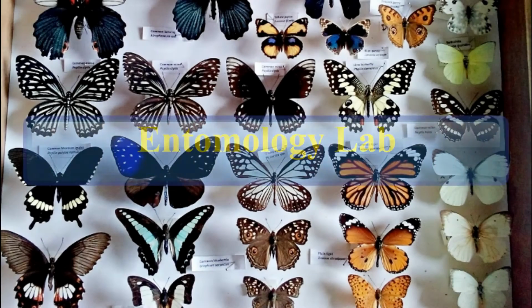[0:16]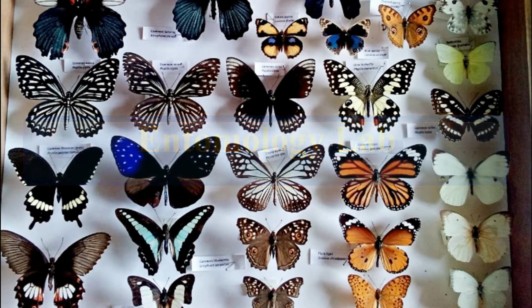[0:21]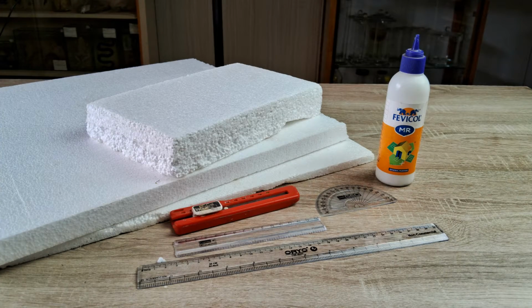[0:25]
Hi, and welcome back to another episode on the subject of practical entomology. This video is going to be a short and concise tutorial on how to easily make your own insect spreading boards of different sizes and configurations using just a piece of styrofoam or thermocol and some glue.
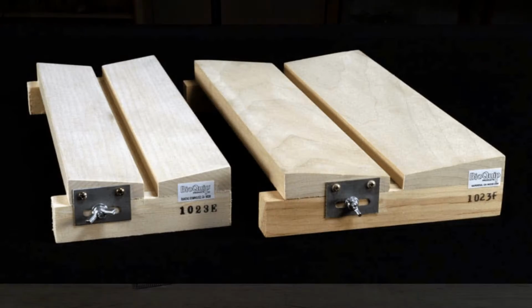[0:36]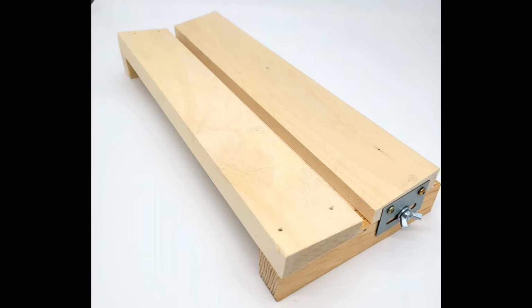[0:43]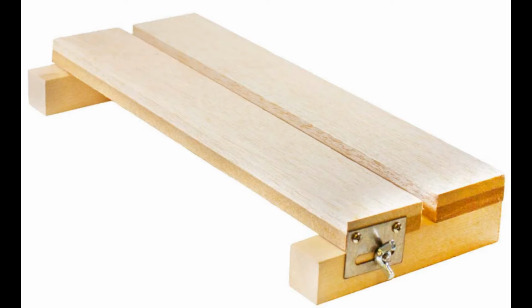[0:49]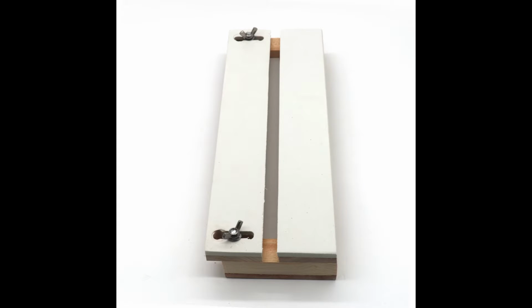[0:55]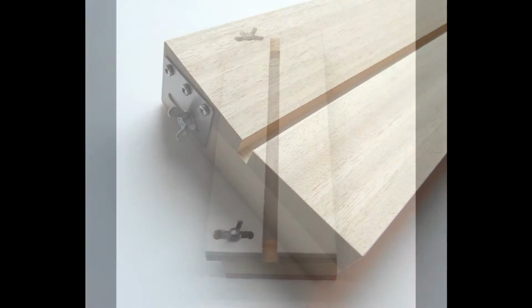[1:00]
Insect spreading boards are traditionally made from soft balsa wood that facilitates quick and effortless insertion of pins through the wood while setting insects. The width of the central groove in the board can also be adjusted to accommodate the body and the limbs of the insect being spread. Wooden spreading boards are, however, not that cheap for insect amateurs and hobbyists. Besides, they come in fixed standard sizes and you obviously have no option for custom sizes.
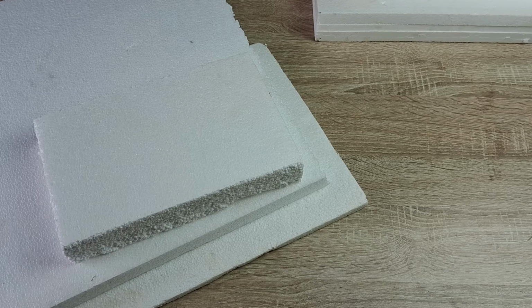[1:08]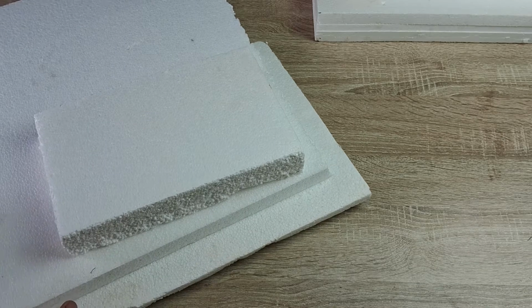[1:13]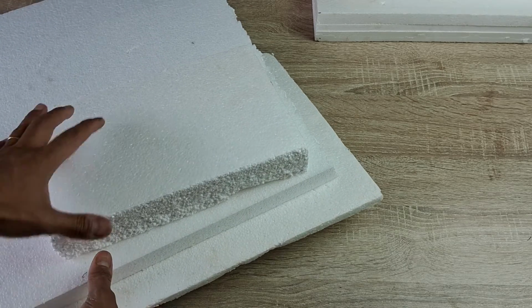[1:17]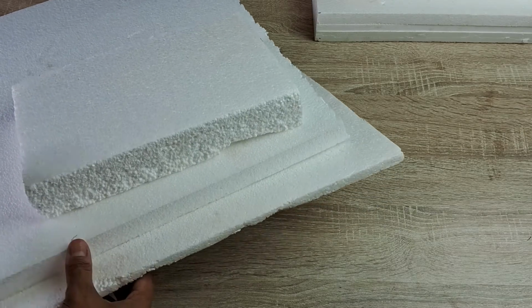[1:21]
In this video, I'm going to show you how to make a very simple yet equally effective spreading board of any dimension you want at a fraction of the price that you'd have to pay for a standard wooden board. This tutorial comes from my own years of experience of using the thermocol spreading board.
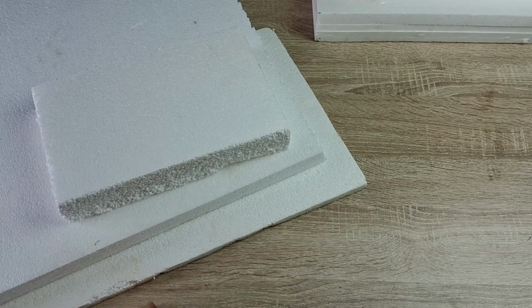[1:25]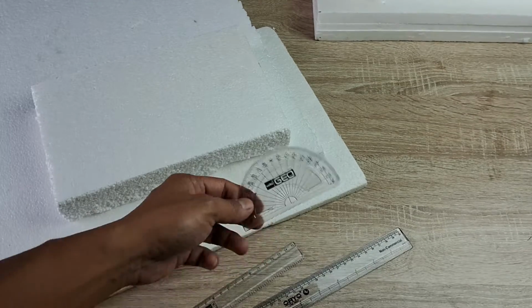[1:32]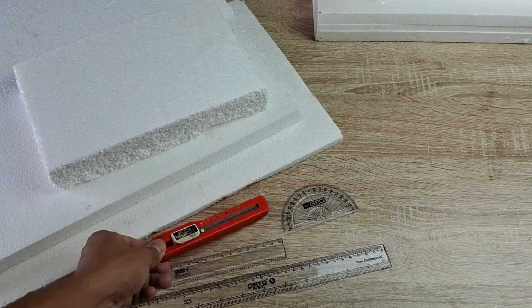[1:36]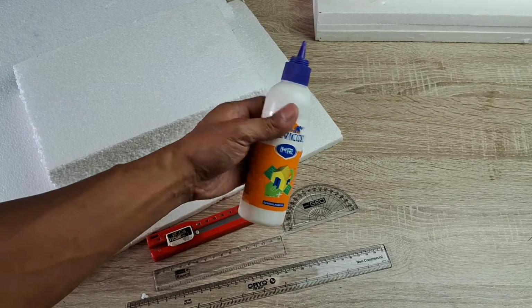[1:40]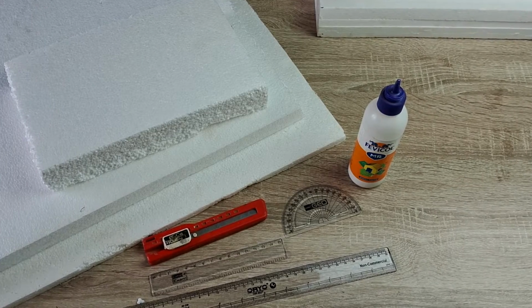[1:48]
So to begin, all you need is some sheets of thermocol, or loosely termed styrofoam in some parts of the world, a transparent plastic ruler and protractor, paper cutter, and a tube of PVA glue such as Elmer's glue or Fevicol. The main advantage of a DIY spreading board is that you can construct a board of any dimension and angle of the sloping platform of the board. These parameters are significant when we consider the huge variation in insect size and shape.
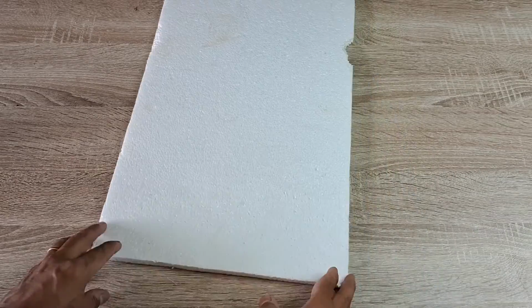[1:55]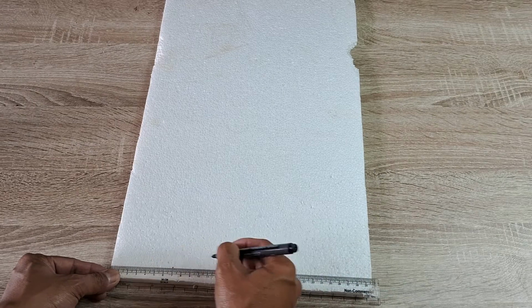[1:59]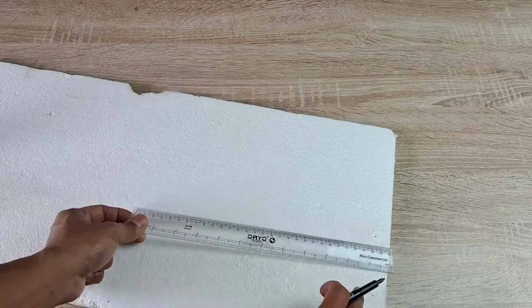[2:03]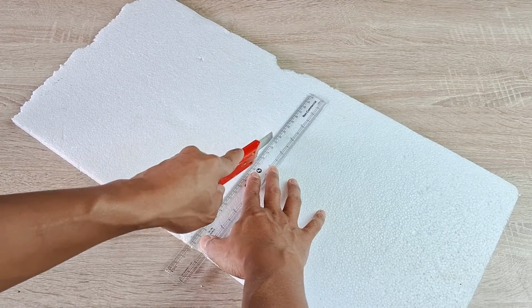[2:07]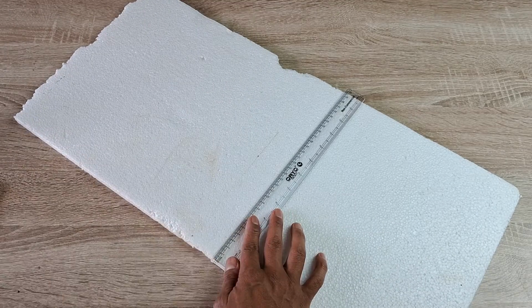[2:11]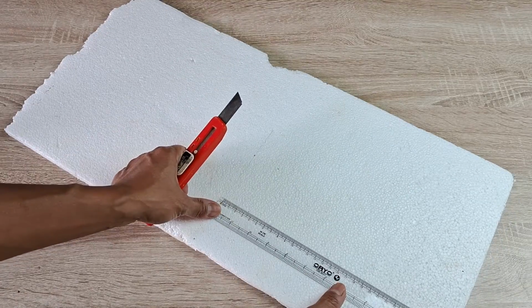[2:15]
To begin, take the thermocol sheet, which is about half an inch thick. Make necessary measurements and markings of the required length and width, and then carefully cut out two sheets of equal dimensions. These will be the two spreading platforms. So when making measurements, keep in mind the average wingspan of the insect specimens you'll be working with on that spreading board.
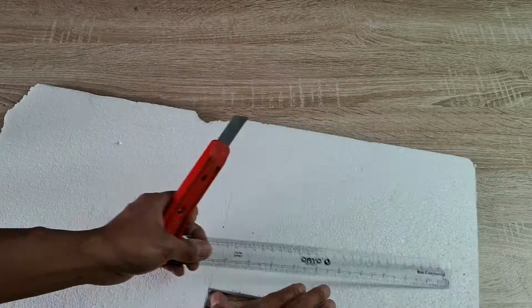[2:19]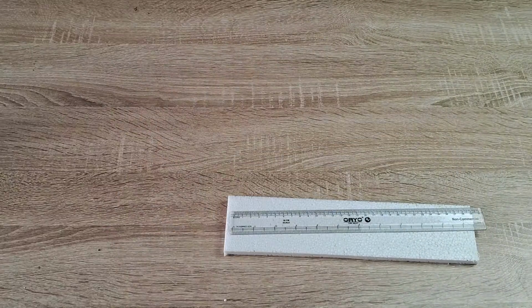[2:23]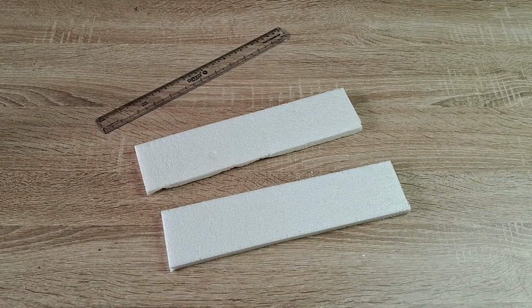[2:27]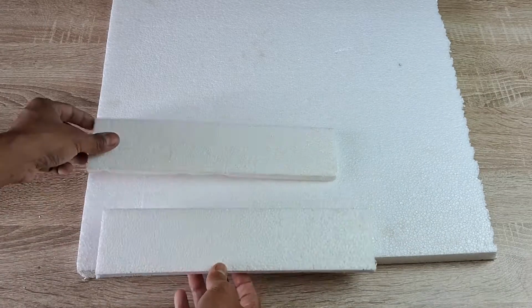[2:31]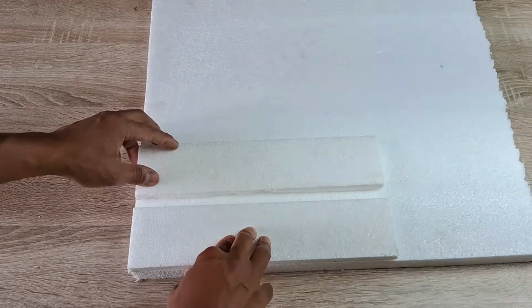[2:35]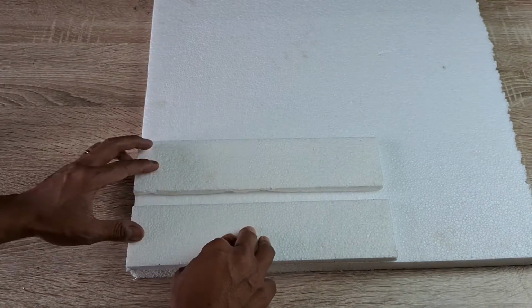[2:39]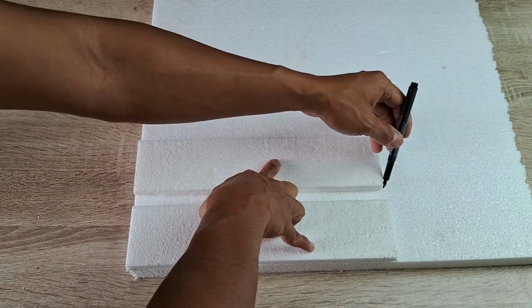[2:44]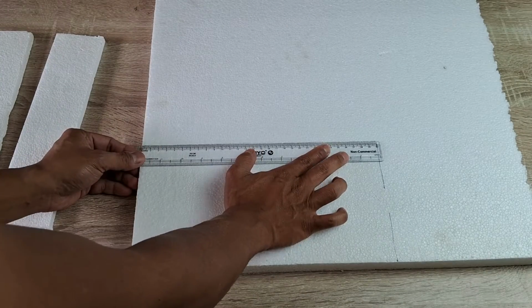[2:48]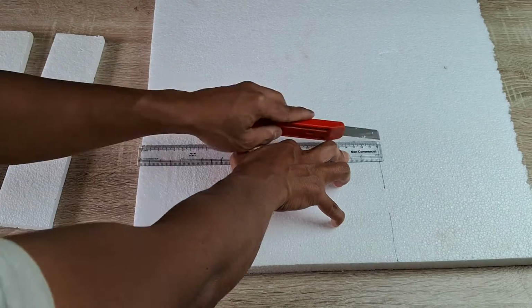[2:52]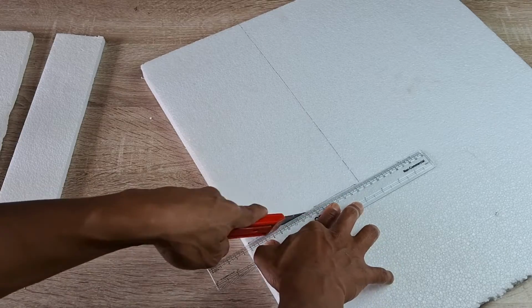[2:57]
Now, take another sheet of thermocol that is about 1 to 2 inches thick. Lay the two previously cut sheets side by side on top of this thick sheet, like so. Make sure to leave a longitudinal space in between the sheets. Make necessary markings and then cut the thick thermocol sheet to the required size. This cutout sheet will be the base of the spreading board. In case you don't find a thick sheet, you can just glue two or more thinner sheets together to make a thicker sheet, which can then be used for the base.
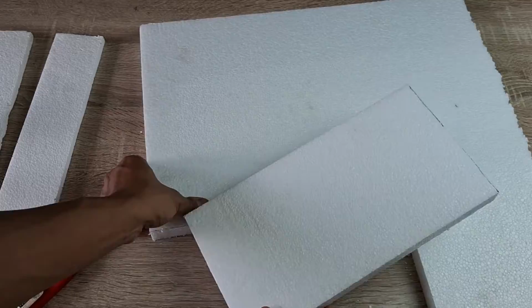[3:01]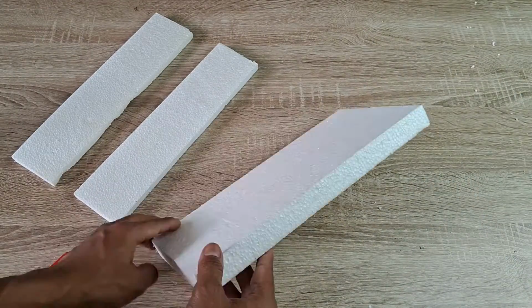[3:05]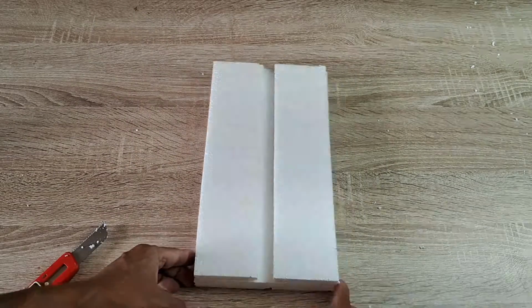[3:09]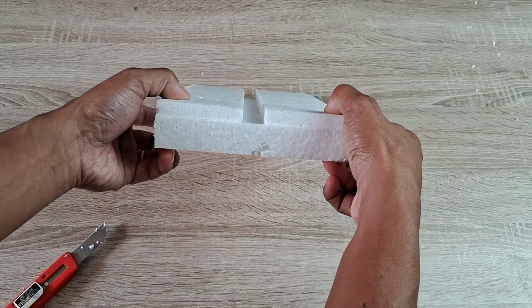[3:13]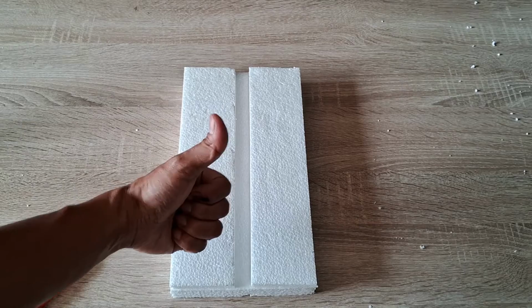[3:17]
Now, if you're not too particular or choosy about whether the wings should be spread at an angle or not, then all you need to do next is to glue the two sheets on top of the base sheet, leaving a groove of desired size in between, like so. Your insect spreading board is ready to be used. However, if you're someone like me who wants their specimens to have their wings set at an angle, then there are a few extra steps to follow.
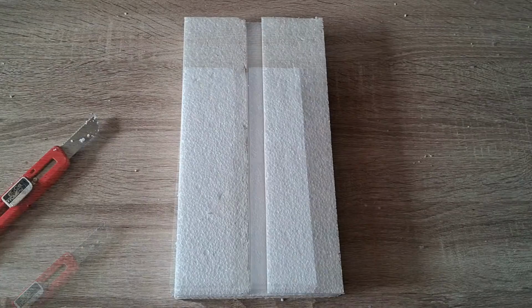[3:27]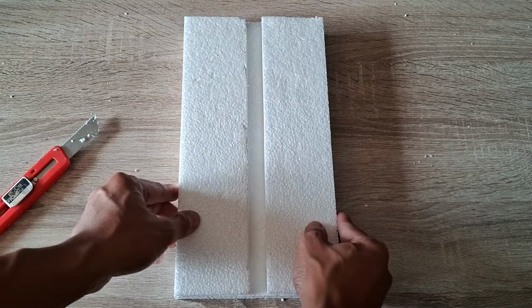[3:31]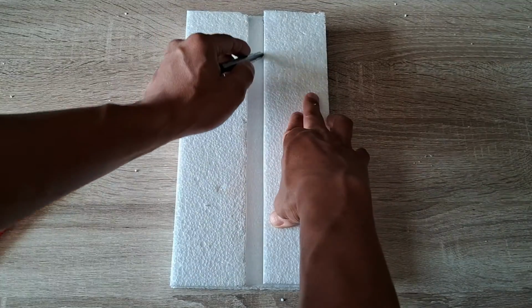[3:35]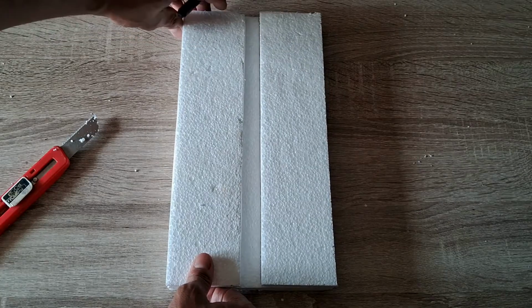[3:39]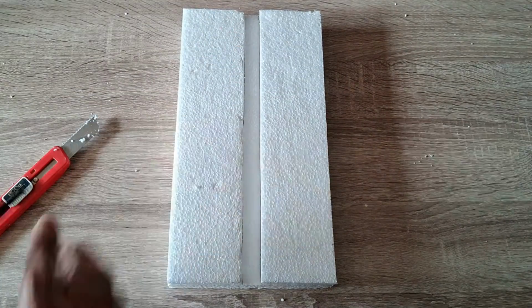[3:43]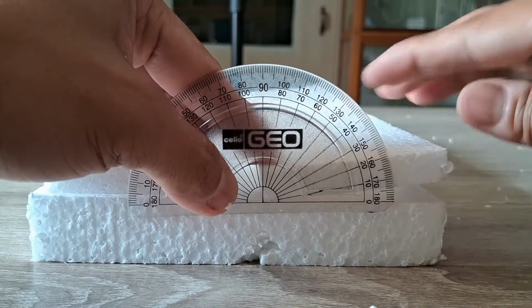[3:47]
First, place the two thermocol sheets on top of the base such that the two sheets are separated by a groove of the desired size and width. Then draw marker lines along the length of the sheets to mark the boundaries of the groove and the position of the thermocol sheets, like so. Then, using a transparent protractor, measure the angle that you want the wings to be set at. I use 10 degrees slopes for my boards.
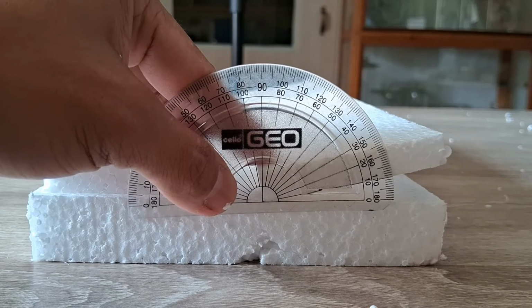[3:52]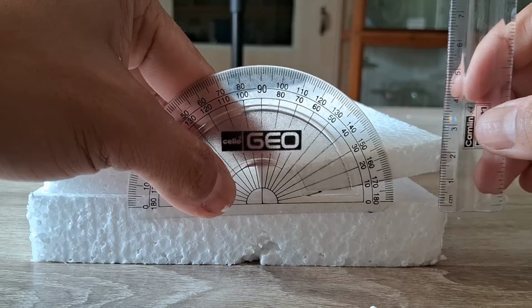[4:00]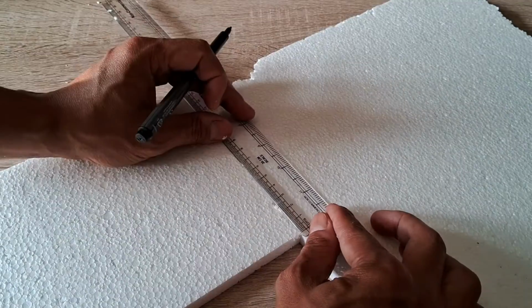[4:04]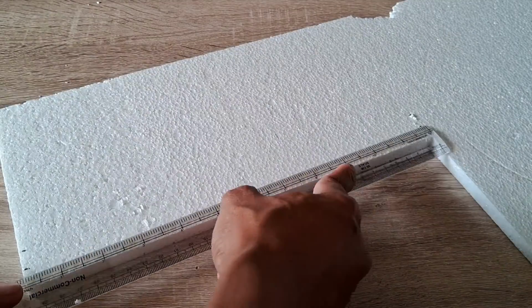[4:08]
Next, measure the height from the base of the board to the extreme lower edge of the slanting sheet, like so. Now, using this measurement, cut two narrow and long strips of thermocol of equal dimensions. Then, if necessary, cut these two strips to the same length as that of the spreading board you're making.
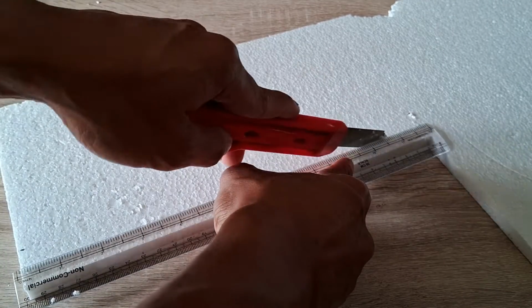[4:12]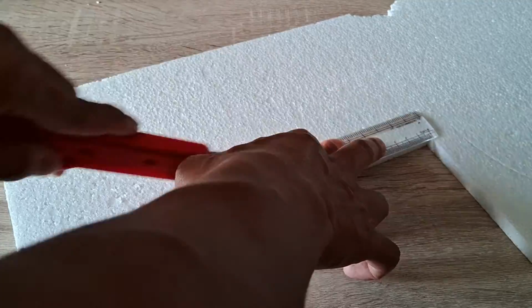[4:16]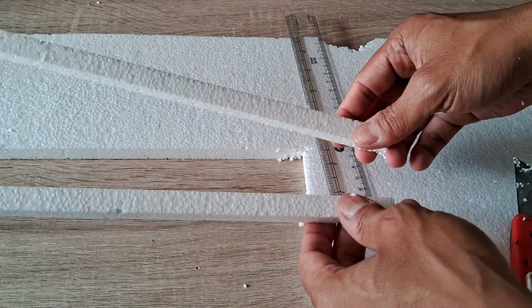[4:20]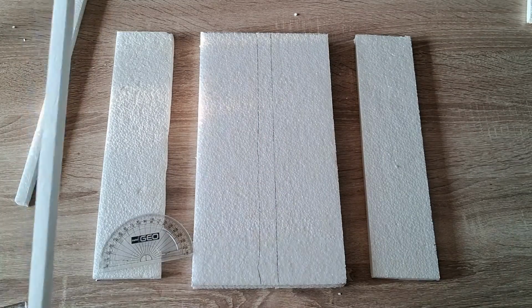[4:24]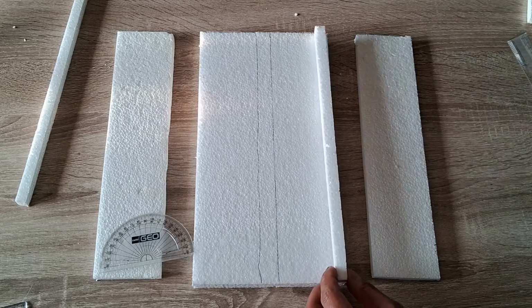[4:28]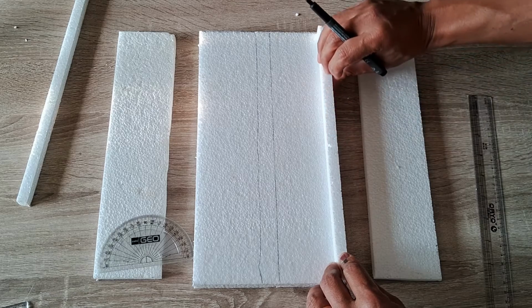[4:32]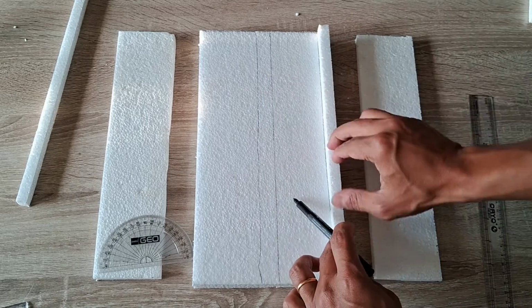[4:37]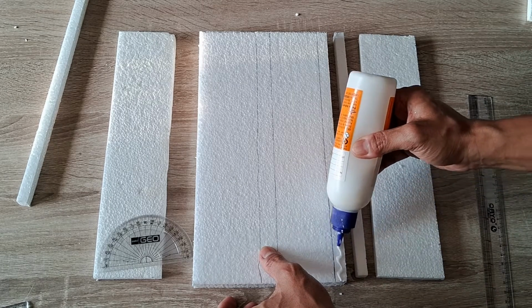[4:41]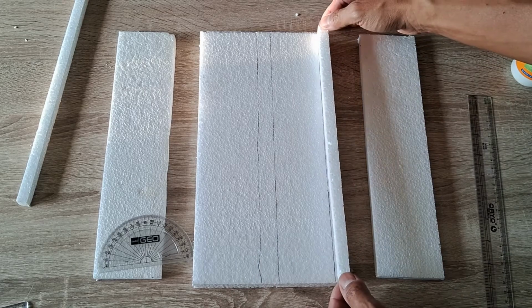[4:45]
Once that's done, take one of the pieces and lay it straight along the corner on one side of the base. Make a final adjustment if necessary. By using a marker, mark the position of the thermocol strip. Keep the thermocol strip aside and apply PVA glue all along the edge of the base, and then press the thermocol strip firmly into position using the previously drawn marker line as your positioning guide.
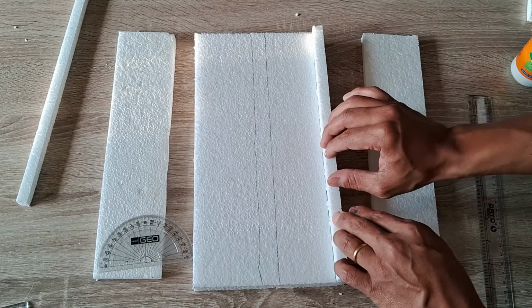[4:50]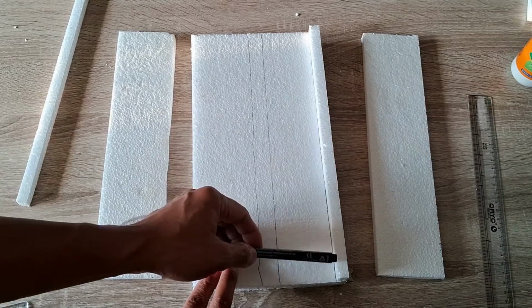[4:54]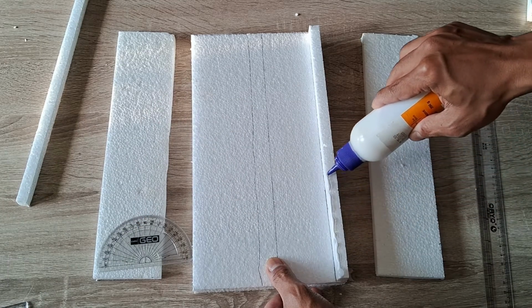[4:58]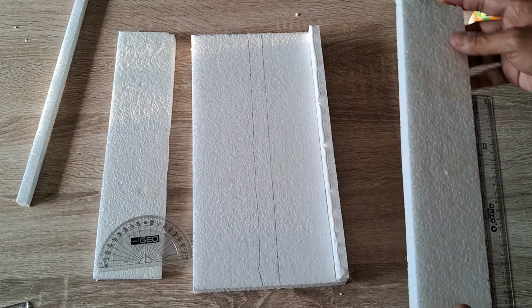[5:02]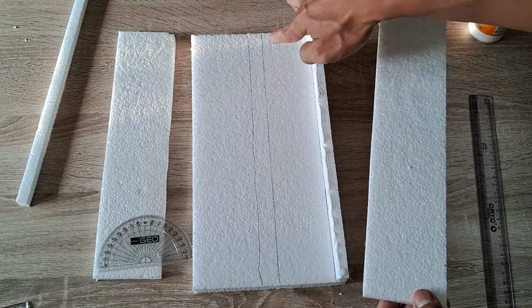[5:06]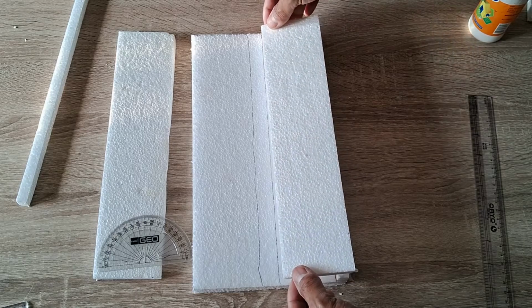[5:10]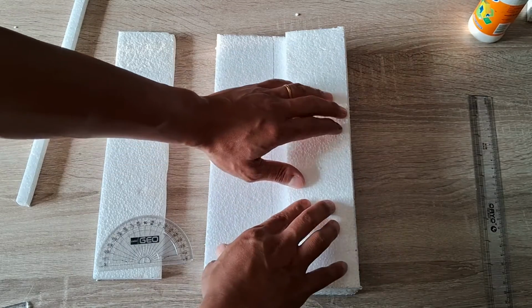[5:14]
Next, apply glue all along the top of the thermocol sheet, preferably along the edge, where the sloping thermocol sheet and the strip will come in contact with each other. Then carefully place the sloping sheet on top of the glued strip, using the previously drawn marker line as your positioning guide. Press the sheet down firmly. Make some positional adjustments if need be.
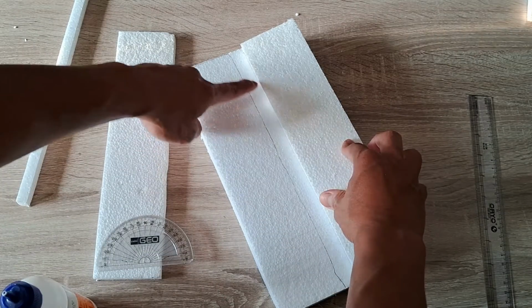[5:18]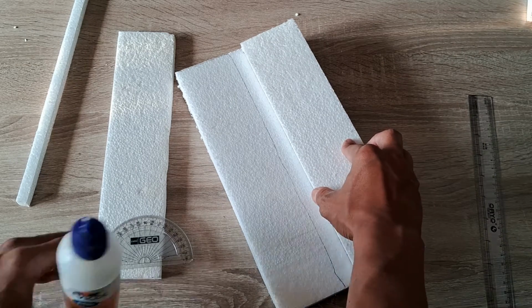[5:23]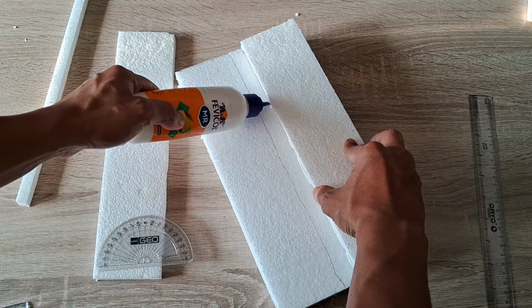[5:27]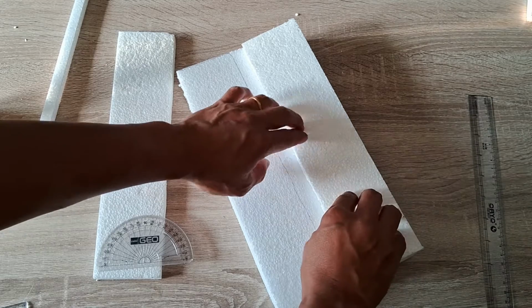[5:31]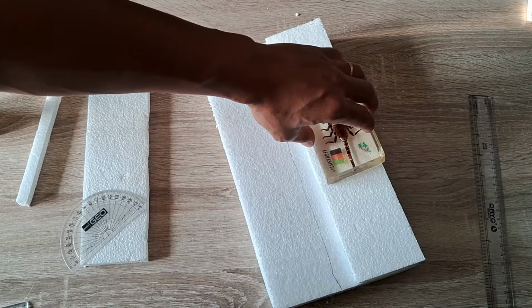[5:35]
Next, gently lift the side of the sloping sheet that is next to the groove, and then apply PVA glue gently and carefully along the boundary marker line that you have previously drawn, like so. Press the spreading platform down firmly. Apply a heavy weight such as a paperweight. Repeat the same steps with the other sloping sheet.
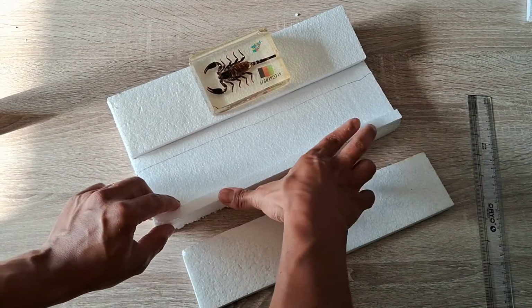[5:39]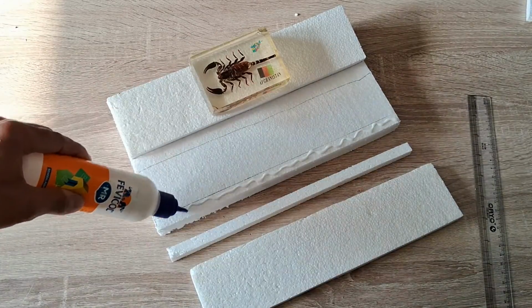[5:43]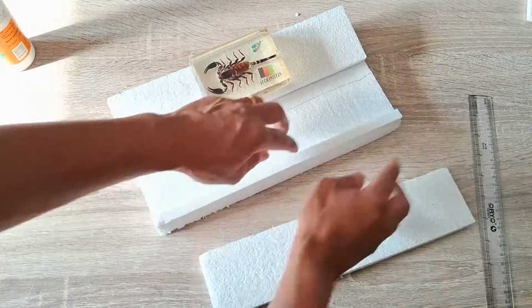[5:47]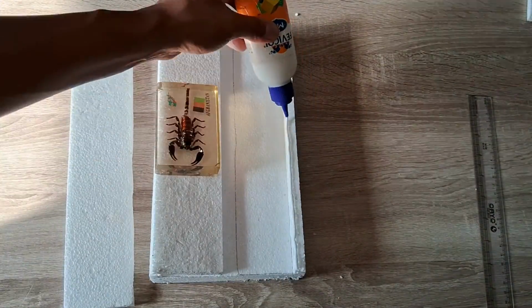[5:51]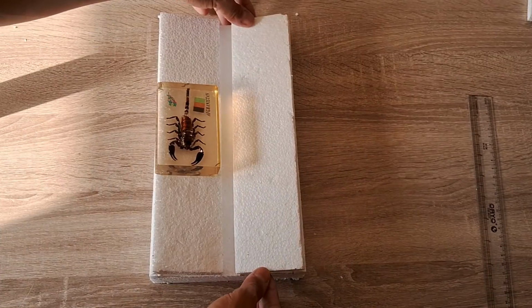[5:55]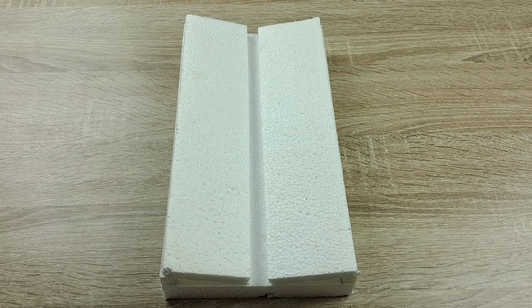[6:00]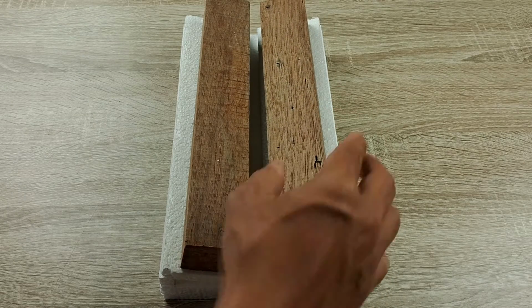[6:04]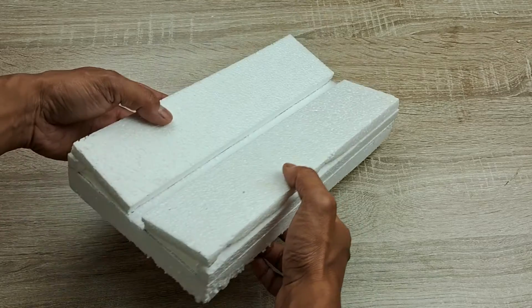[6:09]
Then place heavy weights, such as two large wooden blocks, on top of the two sloping sheets. Allow the glue to dry, and there you have it. Your insect spreading board is ready to be used.
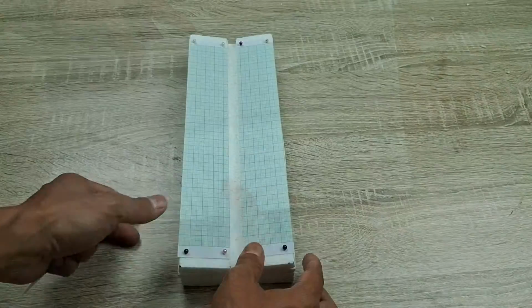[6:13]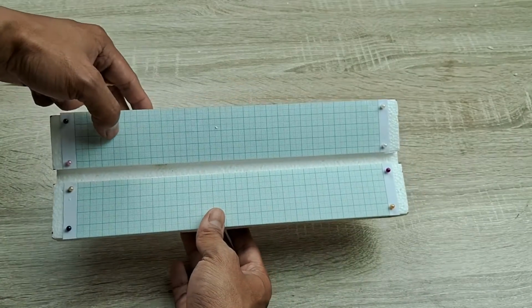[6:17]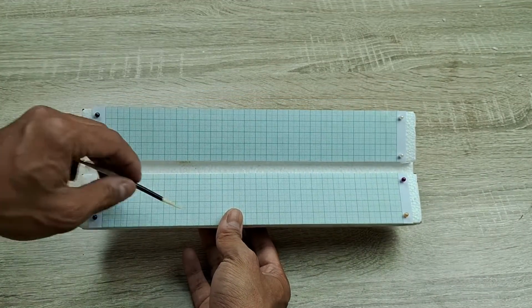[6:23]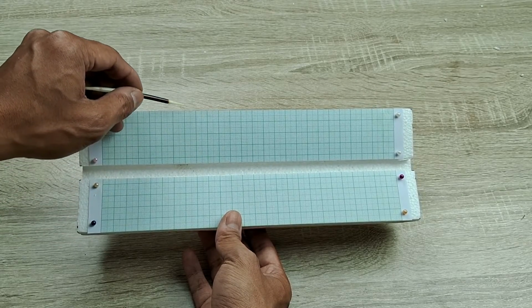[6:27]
Before you pin and spread insects on your DIY board, I recommend pinning or pasting two strips of paper with printed or hand-drawn grid lines on both surfaces of the sloping sheets, as shown here. Make sure the grid lines align perfectly on both slopes. A graph paper with millimeter lines is preferred.
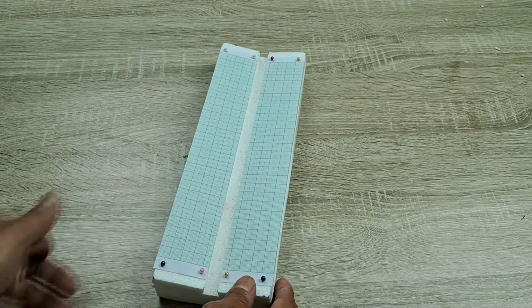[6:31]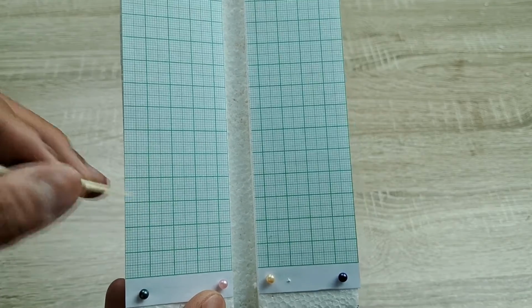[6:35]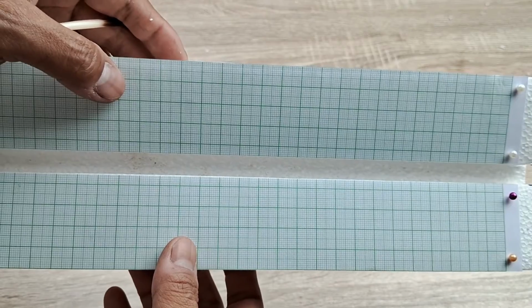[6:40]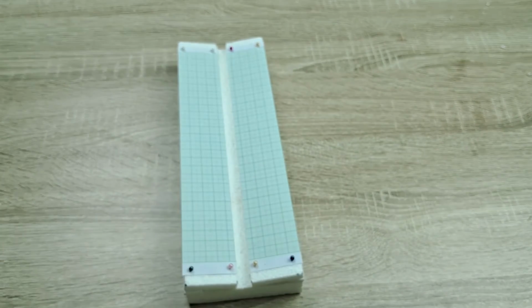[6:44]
This is especially helpful when pinning winged insects such as butterflies, moths, and katydids. The grid lines allow for a perfectly symmetrical and aesthetically pleasing alignment of the wings on both sides. You can also check out my series of videos on how to pin different kinds of winged insects by clicking on the links in the description below.
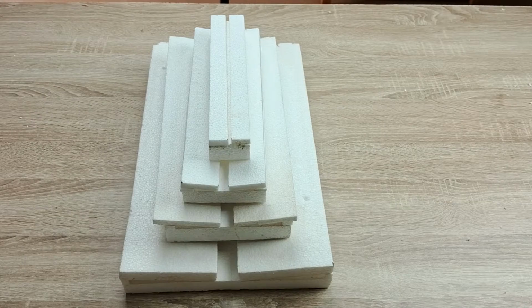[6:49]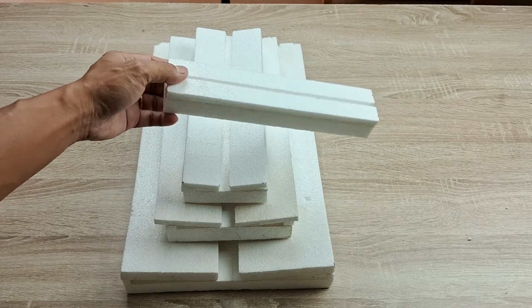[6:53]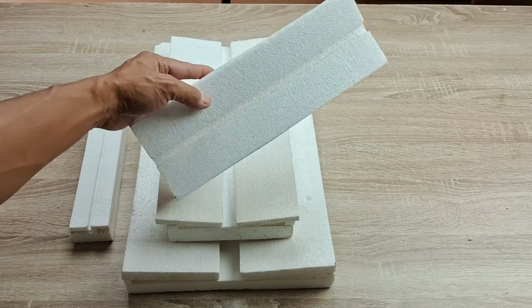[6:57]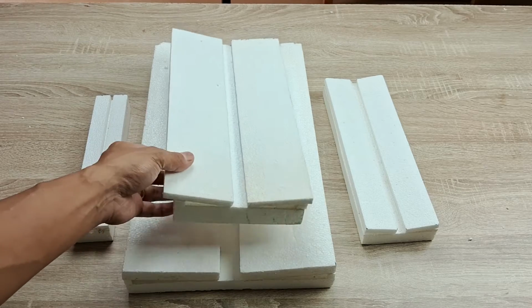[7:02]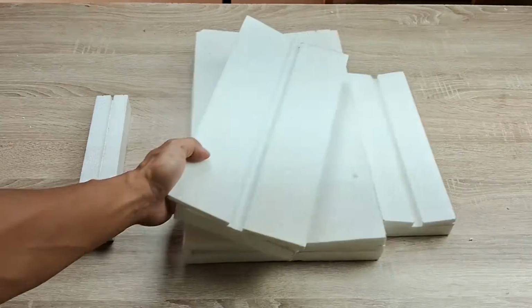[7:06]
So here are some spreading board samples of different sizes I made to suit insect specimens of different sizes. I use the largest size board to pin and spread large specimens such as the Atlas moth. The smallest size board here is used for moderately small insects and butterflies, such as those from the Lycaenidae family.
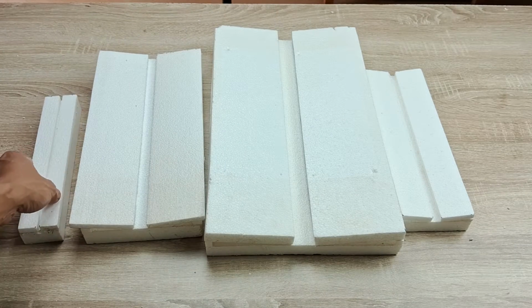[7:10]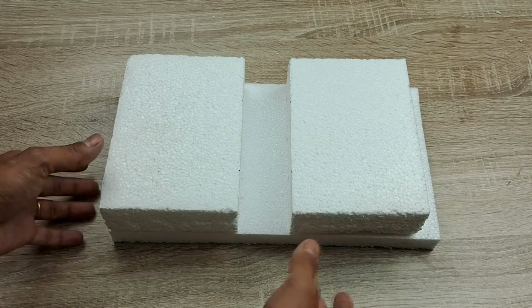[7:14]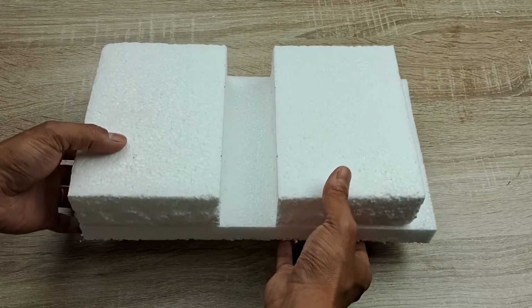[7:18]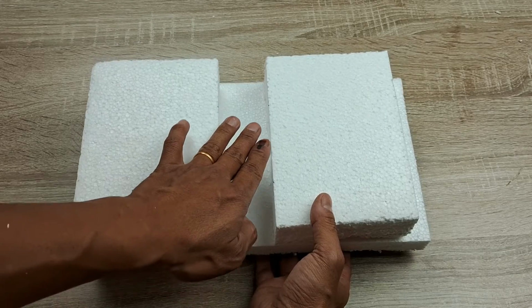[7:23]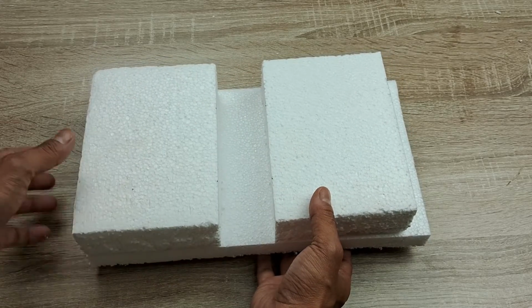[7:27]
For winged specimens with large and bulky abdomen and appendages, you can also construct a special spreading board that looks something like this. This is the design I use. You can make tweaks to this design as per your requirement. The large and deep groove provides a spacious compartment to accommodate the abdomen and conveniently fix the limbs in position.
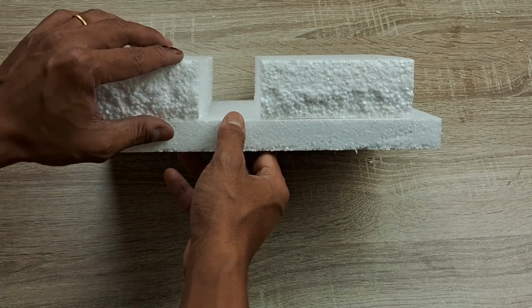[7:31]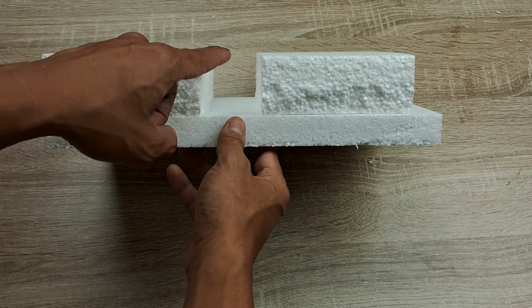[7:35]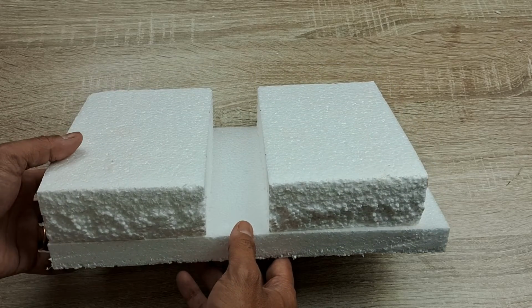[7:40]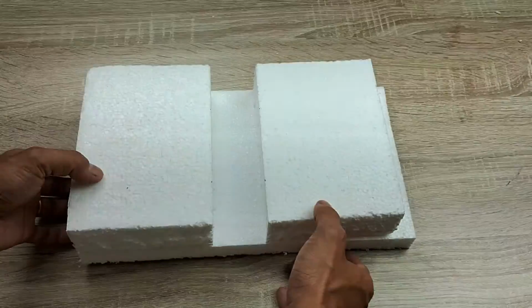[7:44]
The thick and large spreading platform may be flat or fixed at an angle. The thickness allows for the creation of a deep groove and a spacious surface to liberally spread the wings. Different sizes of the same design can be constructed for different specimens with varying wingspan sizes.
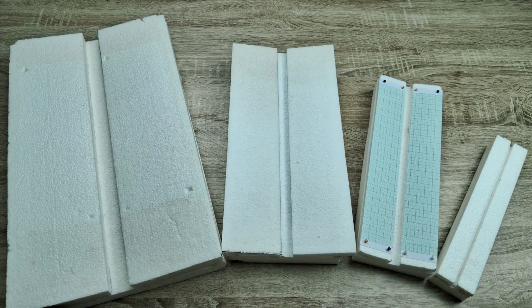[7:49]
So this was all about the DIY insect spreading board made from thermocol.